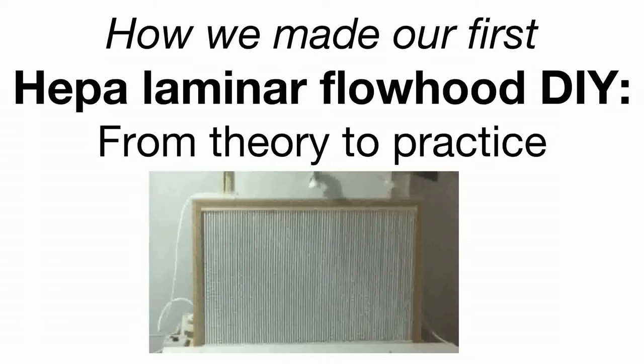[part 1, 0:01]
I'm going to tell you today how we made our first HEPA flowhood, how we did the design and the calculation, and chose our equipment and put everything together. So it's our first one. We are not experts. We are not here to give lessons. But somehow we probably summarize all the research you have to do if you are building your first HEPA flowhood. If you are an expert, please tell us what you think in the comments. We will be happy to know what could be improved in our design and in my video.
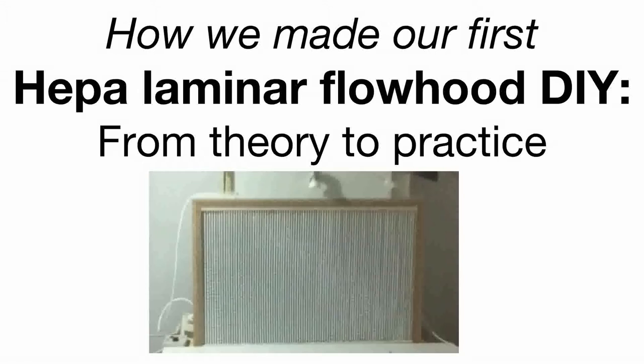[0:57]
So first I will describe what a HEPA flowhood is, and then I will explain how we choose the filter, the blower, the ventilator and the prefilter. I will finish on the surprises and mistakes we had while we were building it. So after the presentation I will show you some live pictures, live videos of the construction and of our flowhood. It is a special design, extra silent, and I will show you the HEPA laminar flowhood that we have built, working, that we are using now regularly.
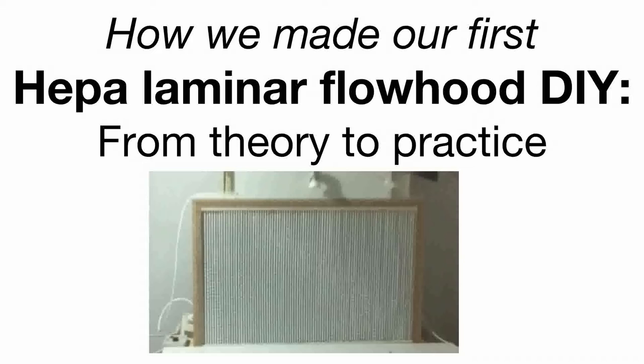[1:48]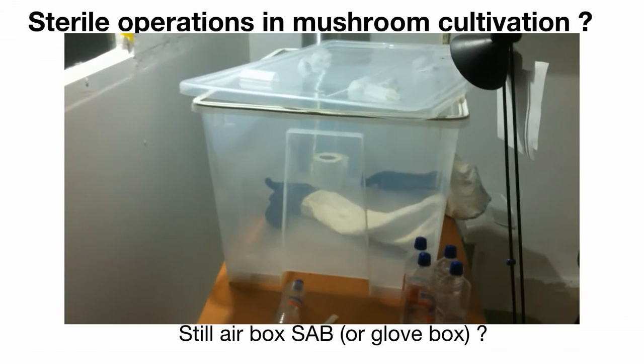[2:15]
In mushroom cultivation, we need to make sterile operations. So up to now we need to use a glove box or still air box, like in this image here, and it's a cheap and very efficient way of doing mycology, but we made like half a ton of sawdust in something like this, no, bigger.
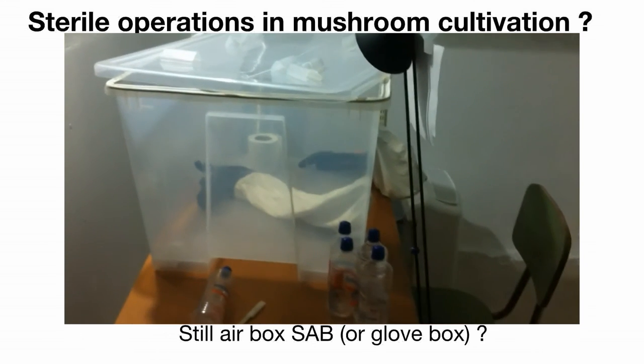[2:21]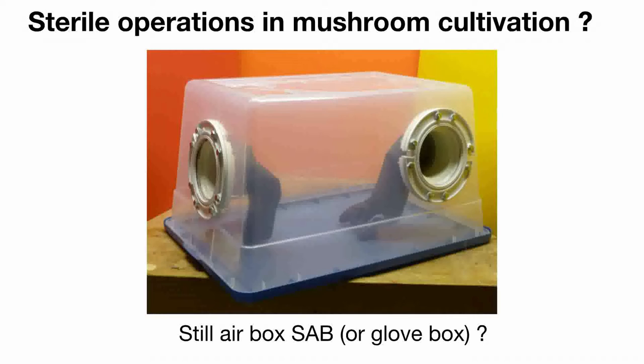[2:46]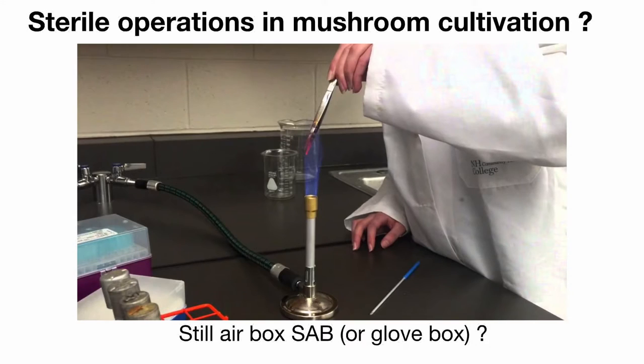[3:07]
Now that we made our flowhood, we keep our glove box because it's a better choice for cloning wild mushrooms, where you don't want a lot of wind on your specimen because it spreads contaminant everywhere. But for regular mushroom cultivation, it's more the laminar HEPA flowhood that is used. So it's not that bad, the glove box. There is another alternative, Bunsen, but I won't tell you more about it here.
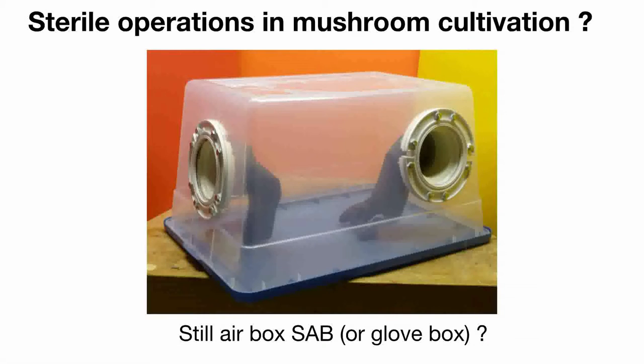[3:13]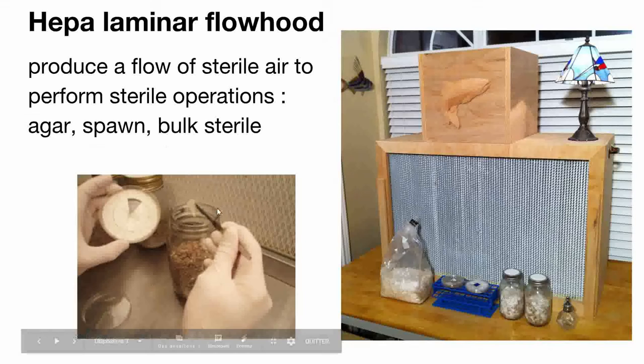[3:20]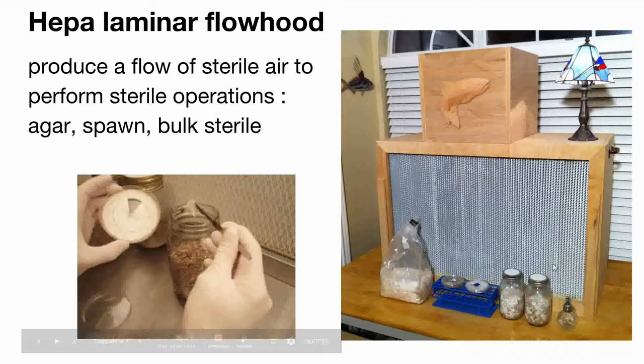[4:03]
Let's talk about the HEPA laminar flowhood. The idea is to produce a flow of sterile air and perform the sterile operation in front of this flow. Operations like agar culture and spawn multiplication: you have the agar, and you make your first master spawn in front of the flowhood. And these are the different steps, and you can do all the sterile work, the final sawdust blocks that will give the mushrooms as well, in front of the flowhood. And it's very practical for us because you can easily make many blocks of sawdust, while in the glove box you have to make only a few of them.
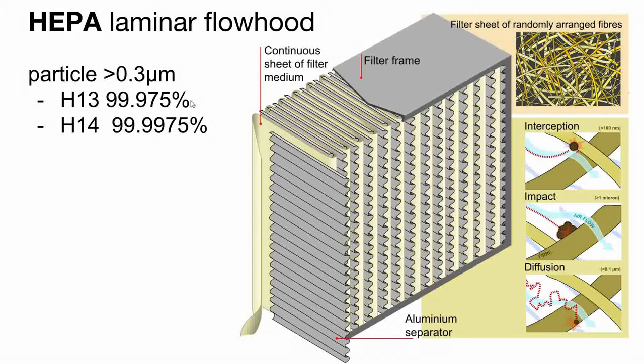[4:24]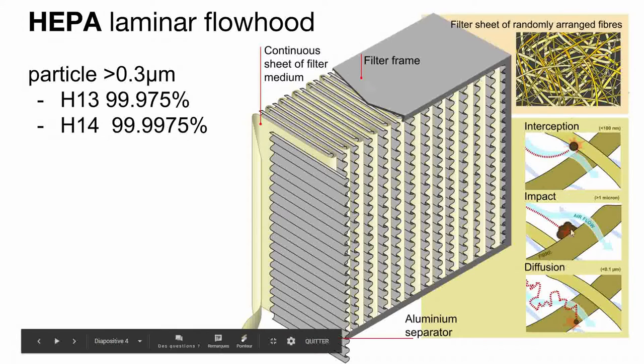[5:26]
What is a HEPA flowhood exactly? A HEPA filter, first, can filter down to 0.3 micron. And depending on the class of the filter, it can filter 99.9975% of the particles of this size or bigger than 0.3 micron. It works like a cloth, a sheet of randomly arranged fibers, and the random arrangement makes the flow difficult for particles to cross, and they guarantee this.
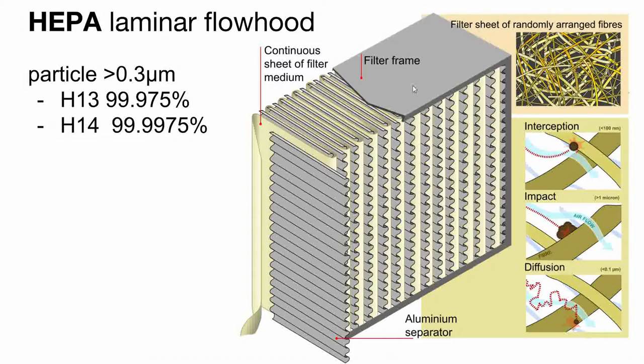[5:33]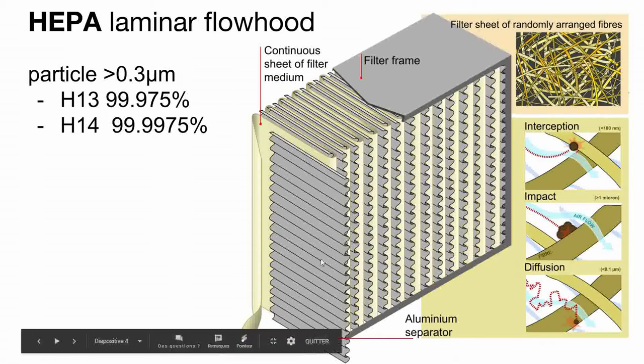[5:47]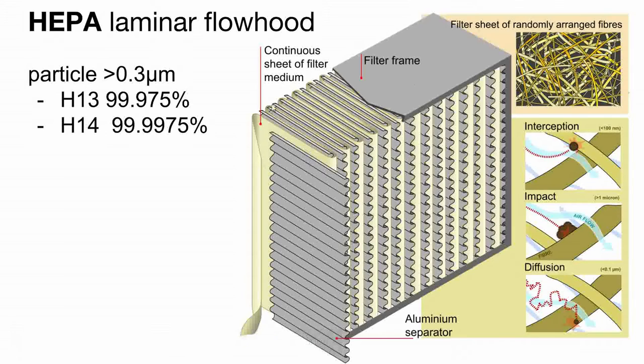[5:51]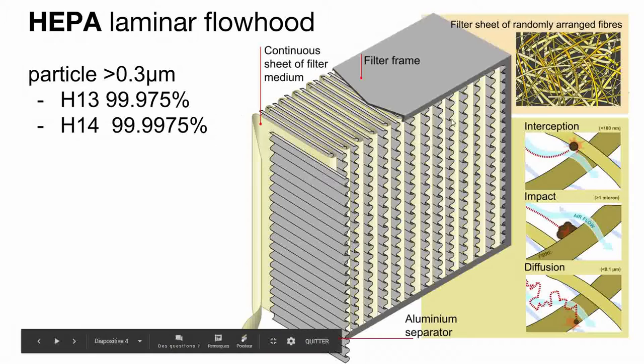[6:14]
If you look at the HEPA filter of a flowhood, you will see this blue aluminium separator and this white folded sheet of HEPA filter, made of randomly arranged fibers folded like this. The aluminium separator keeps the folds away from each other, so when the flow comes they can have a regular distribution of air through this folded sheet filter.
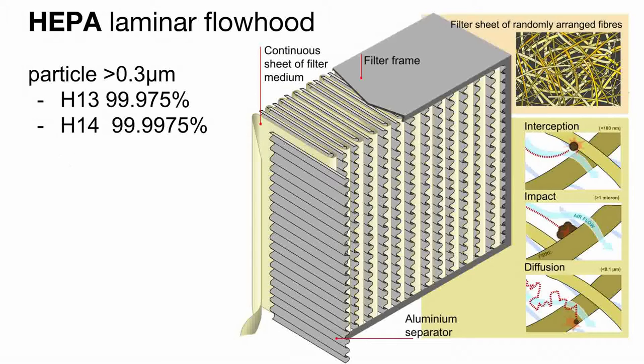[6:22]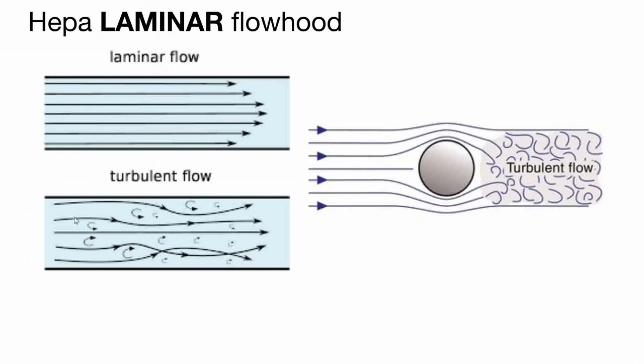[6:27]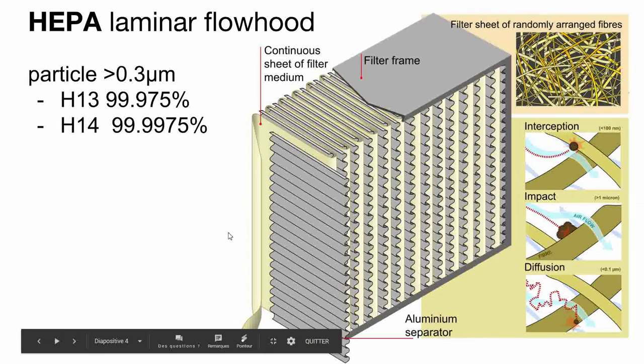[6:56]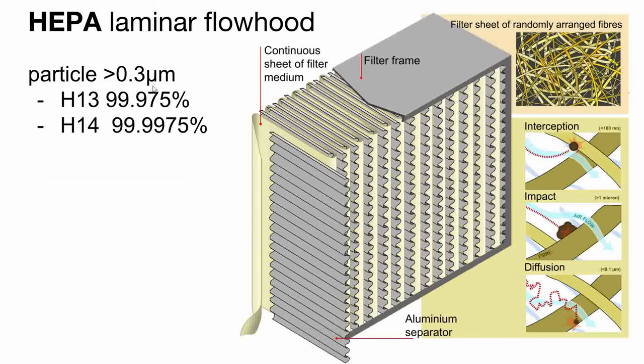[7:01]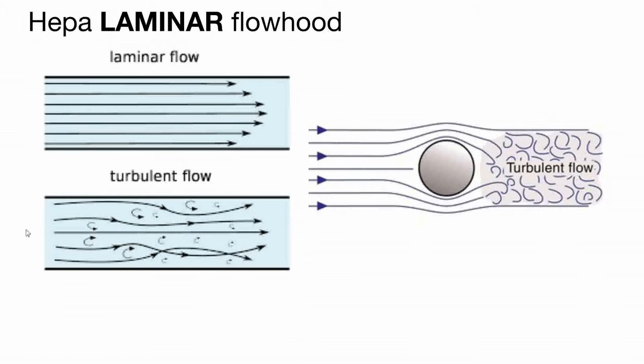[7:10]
What is laminar in HEPA laminar flow? Not all HEPA filters make a laminar airflow, only a certain type allows that. We need this type because the HEPA laminar flowhood does not only produce sterile air, it produces a laminar flow of sterile air. Bacteria are bigger than this 0.3 micron. Only viruses can be smaller than this, and for mycology it's not a concern, so we consider it sterile. So all the contaminants bigger than 0.3 micron, like on your hand, in front of the flowhood, will move away from the HEPA because there is this flow of sterile air blowing on your face, and it's blowing in a way that is laminar.
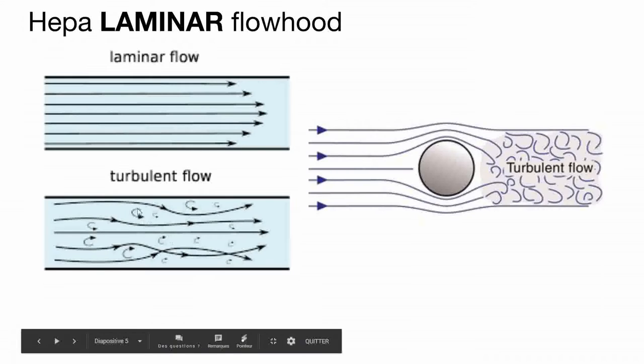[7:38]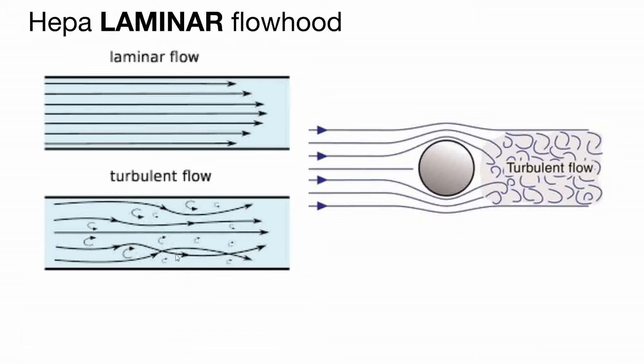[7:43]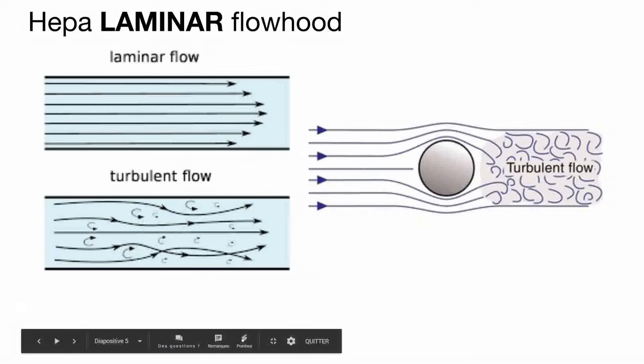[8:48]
When it's not laminar, it's turbulent, and when it's turbulent, some particles come back. They kind of circle around, and this makes it possible for contaminant from your hand to reach the substrate near the flowhood if your flow is not laminar. And after an obstacle, the flow becomes turbulent. This is a normal thing. So you don't work behind another object. You always need to be in front of the flowhood to have this laminar flow that will blow only clean air without the turbulence that can bring contaminants from around, from you, actually. That's the biggest problem.
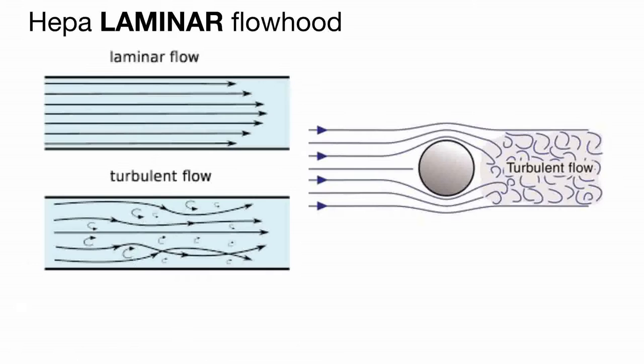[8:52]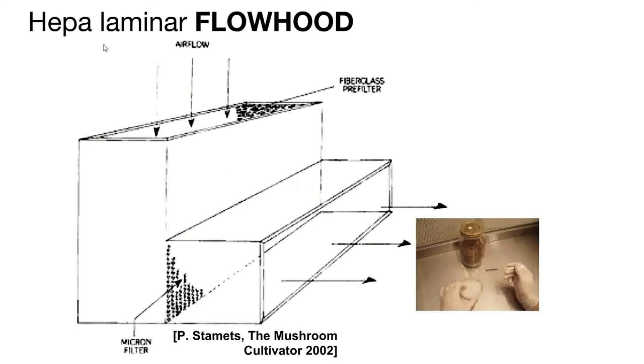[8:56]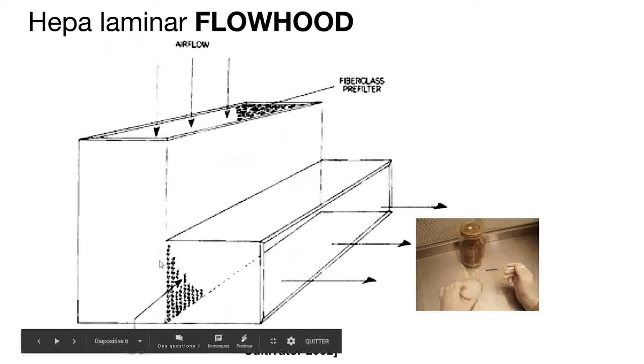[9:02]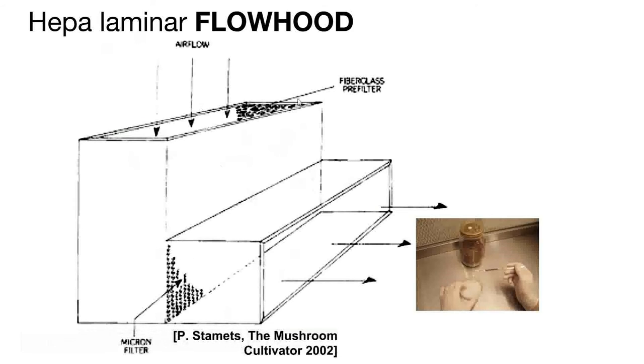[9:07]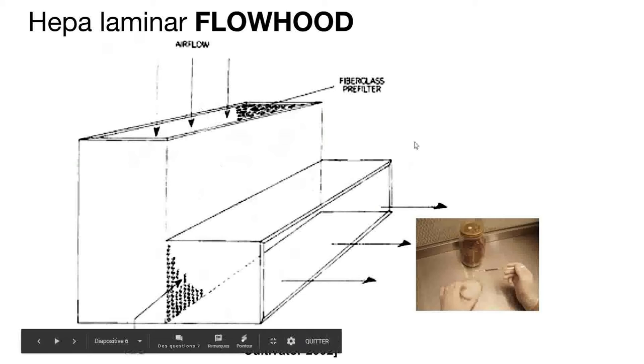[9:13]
So we arrange this filter that produces laminar flow in a box like this. It's at the bottom of the box here, and at the top of the box here there is an opening, and we put the prefilter. This is coming from Paul Stamets' book.
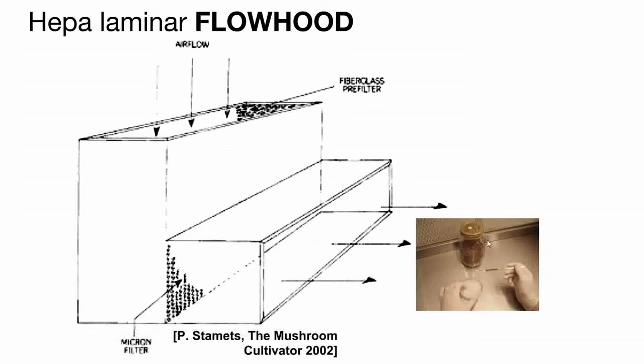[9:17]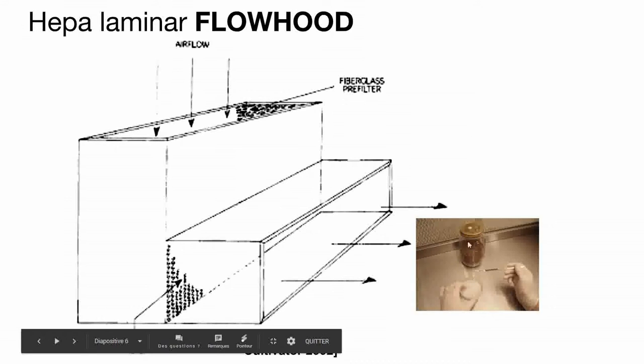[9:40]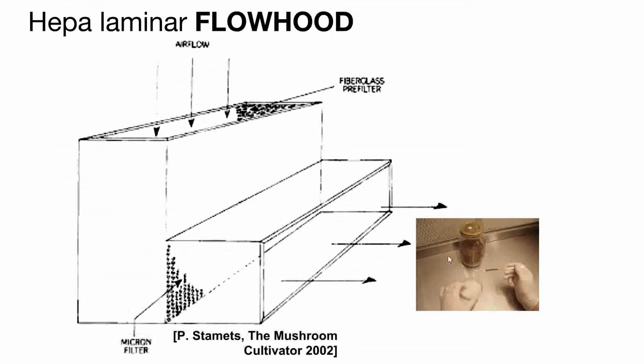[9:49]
Okay. And after we can work on this clean flow of laminar air when we put these objects in front of the HEPA. So here the clean substrate is in front of the HEPA, and maybe it's better to not work behind this jar, like he does in the picture.
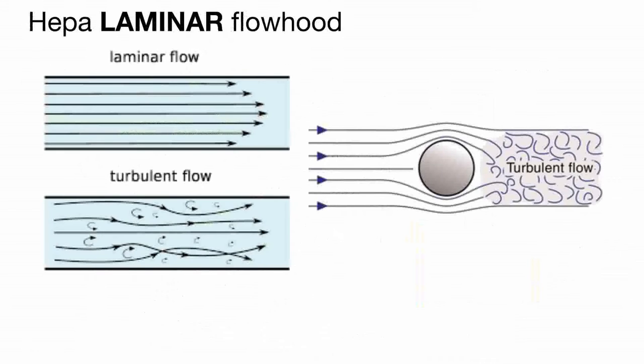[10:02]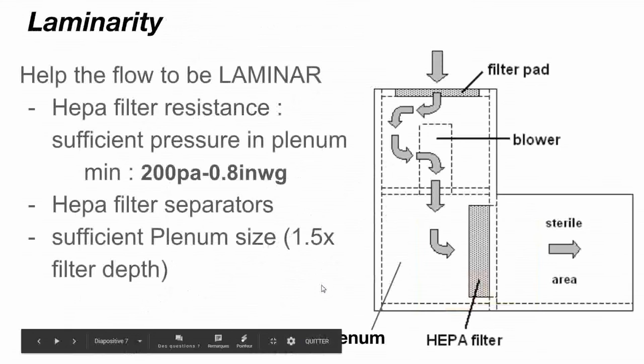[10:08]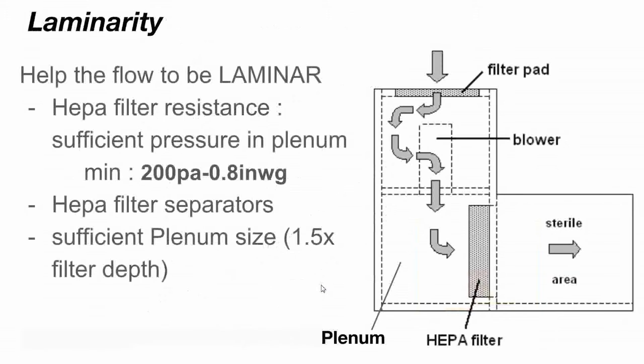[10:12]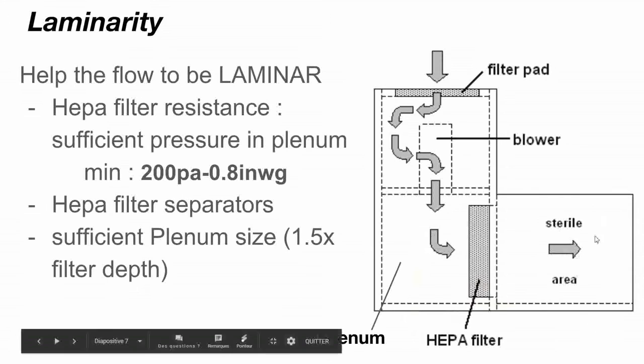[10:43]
So again, I will insist a bit more on what is laminarity. The fact that the particles move parallel to each other. This is laminarity. To achieve laminarity, you need a HEPA filter that will resist. So here we see what is inside the box. Inside this box there is the prefilter and the blower that will push air inside the plenum here that will be under pressure, and there is the HEPA here, and this pressure will go through the HEPA filter to bring sterile air in the work area.
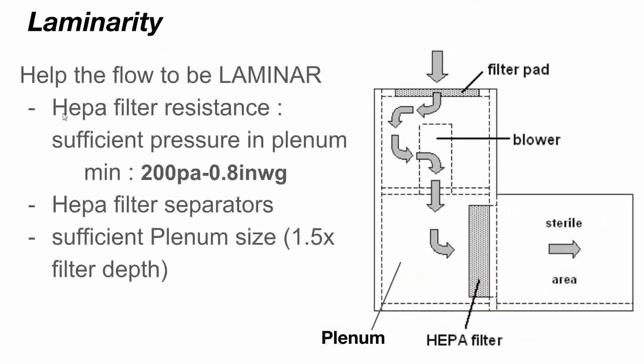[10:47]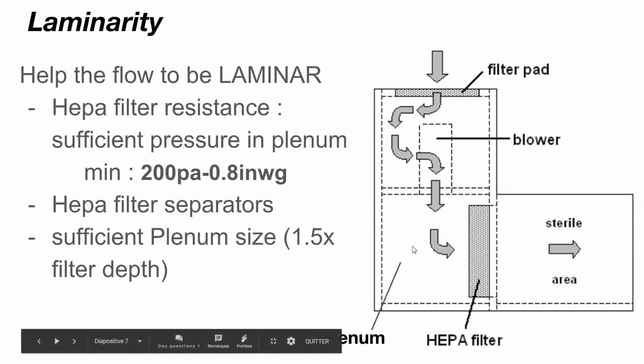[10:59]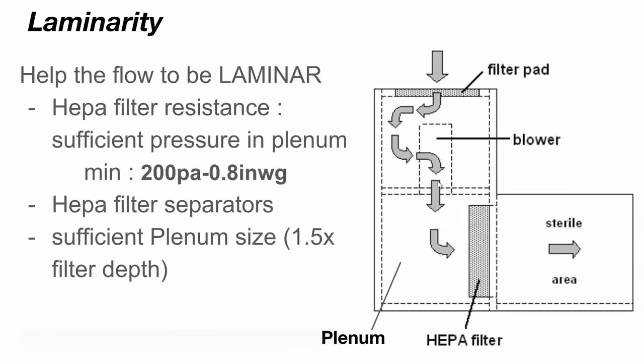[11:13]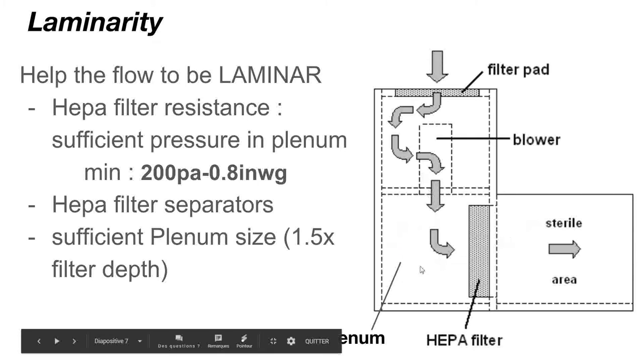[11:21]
So we need actually a HEPA filter with a resistance sufficient to build some pressure in the plenum, and this is what helps the flow to be laminar. If the pressure is too small in the plenum, meaning that the filter here is not very resistant, the air will go from the blower to the outside more directly, without really building a good pressure in the plenum. So this is what we found. The information is that we need 200 Pascal of pressure here. I will give you the reference later.
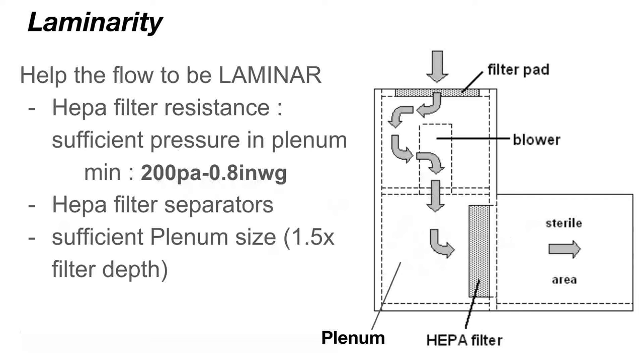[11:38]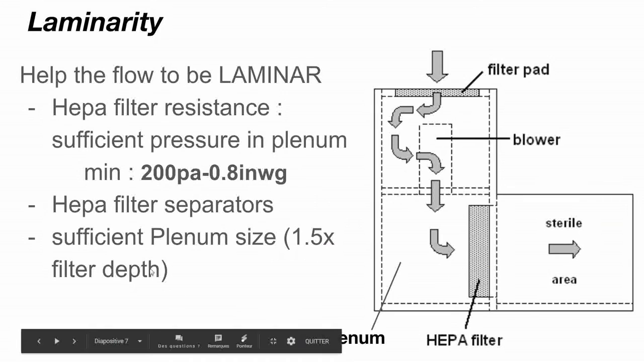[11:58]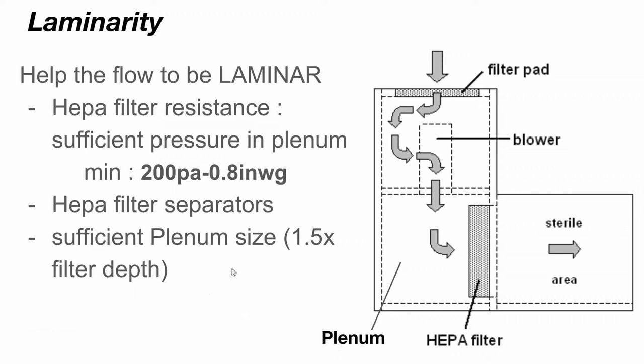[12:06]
Rabbit, let's grow mushrooms author, and he's saying that yes, the minimum you want is, Stamets recommends to have 1 inch of water, so it's 250 Pascal in here, and I will show you that it's not that easy to have this pressure, but this is the most important thing about the laminar HEPA flow, get a good laminarity, to have a good resistance, and this means to have a bigger blower usually. So we'll see that in detail here.
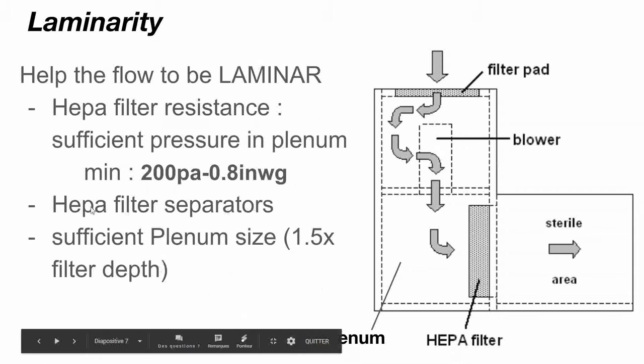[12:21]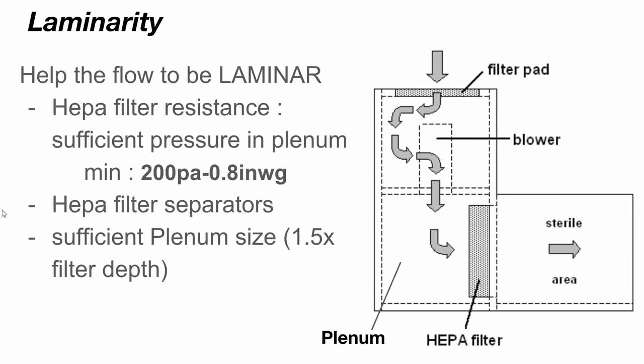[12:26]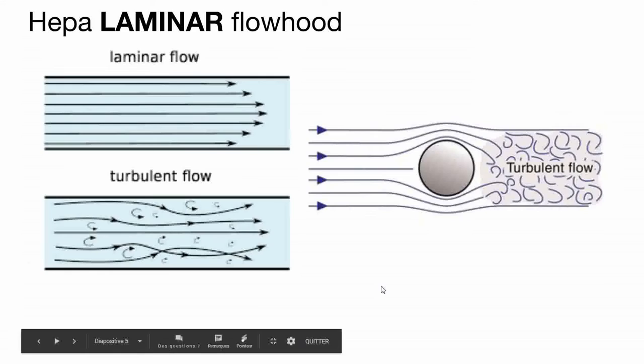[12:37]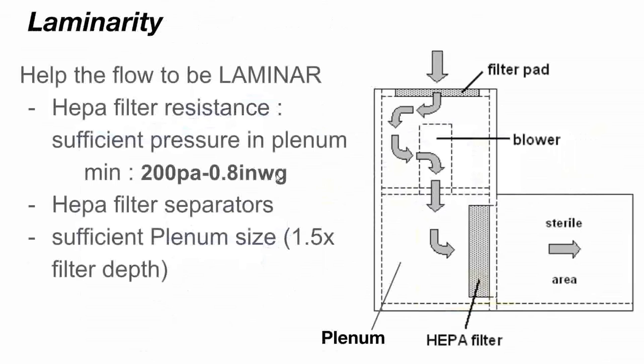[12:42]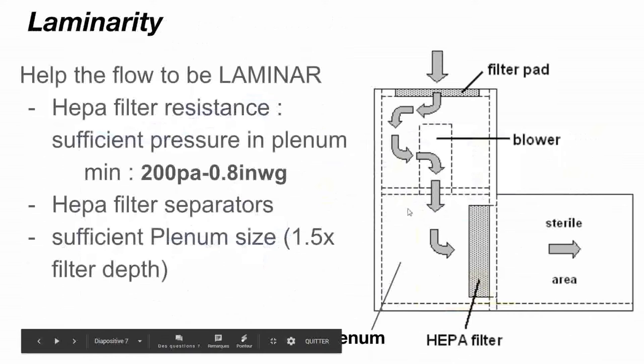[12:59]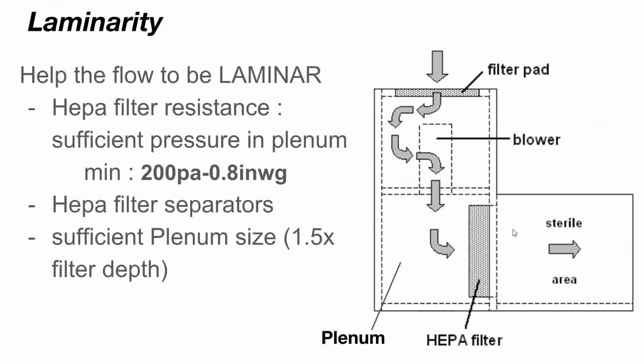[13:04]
The other things are that the separators, like the aluminium ones in the picture here, need to contribute to the laminarity as well. They help to keep the folds away from each other, which is not always true in HEPA class filters, but only for the one we use for making a flow hood. And also we have a sufficient plenum size, so the size of this box needed to be big enough for the air to distribute rather than to pass through directly. And maybe that's one of the mistakes we did, is to take only 1.5 times the filter depth, because I think it was not sufficient. I find it has too much difference between the corners, so maybe it doesn't fit so well inside the plenum. But we have sufficient pressure, so I will tell you about that at the end.
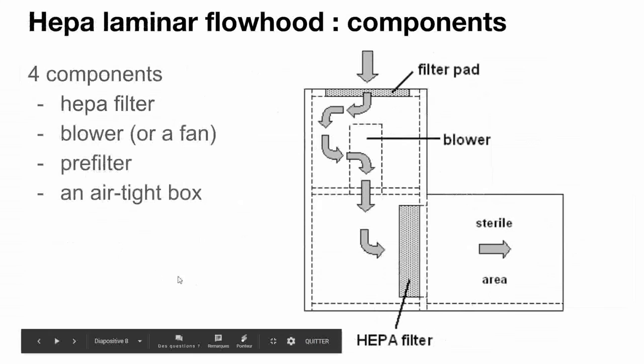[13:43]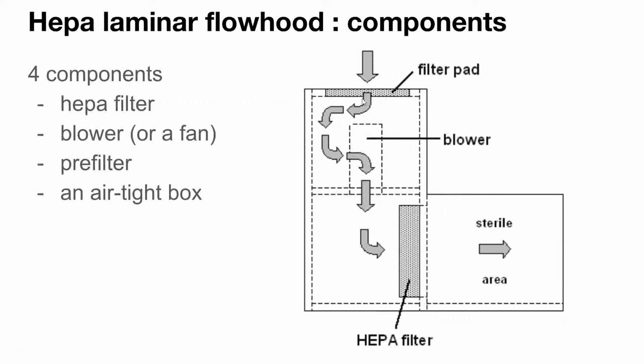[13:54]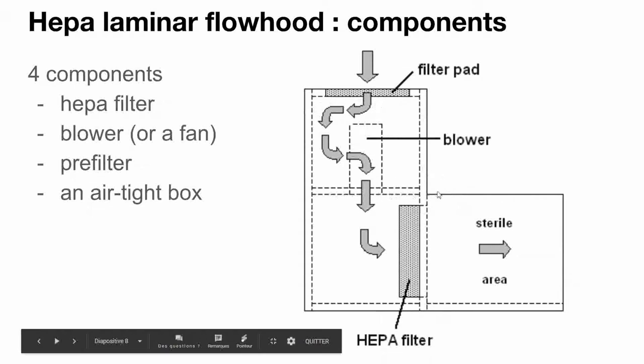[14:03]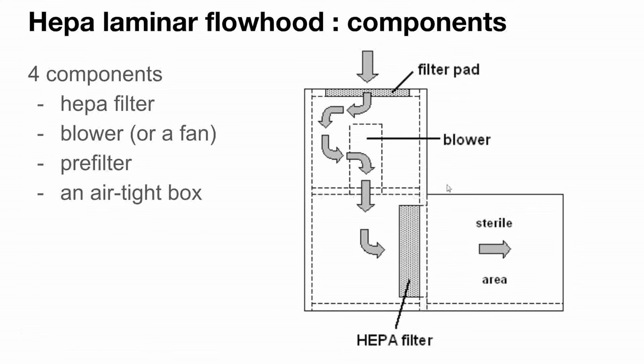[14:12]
Now let's focus on the inside. So we have 4 components, HEPA filter here. We have a blower here, or a fan, a ventilator, a prefilter. This is of course inside an airtight box. Some people extend the box on the sides, we didn't. Many people don't extend the box on the sides, and many people even don't build a box around the ventilator, we did. We'll show you why later, but these are the 4 components you will need to make a HEPA flow hood. It's not very complicated.
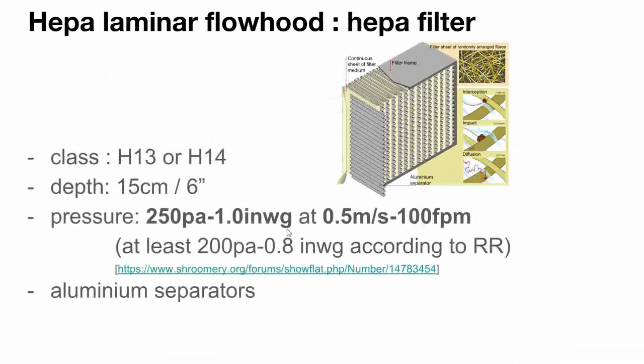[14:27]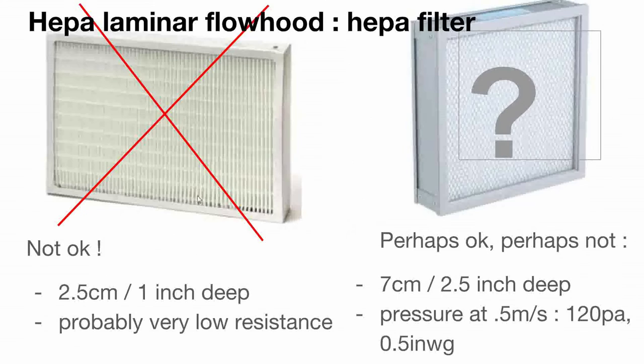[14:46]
Let's start with the HEPA filter. So you need this class of filter, H13, H14, with a depth of 15 centimeter, 6 inch, and a pressure of 250 Pascal, when it is tested with a flow at 0.5 meter per second. It's a pressure of 1 inch of water when it's 100 fpm. So it's not that easy to find exactly this.
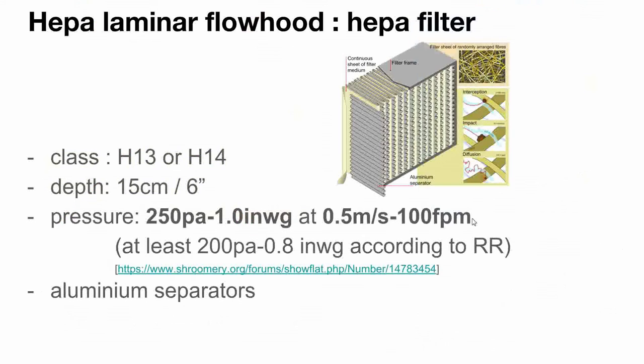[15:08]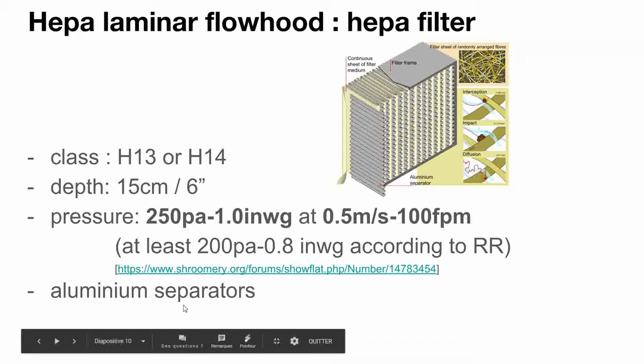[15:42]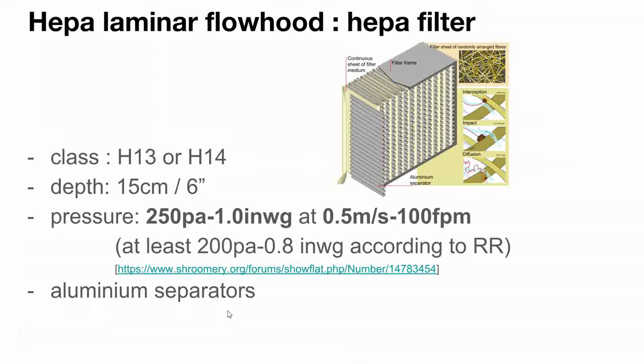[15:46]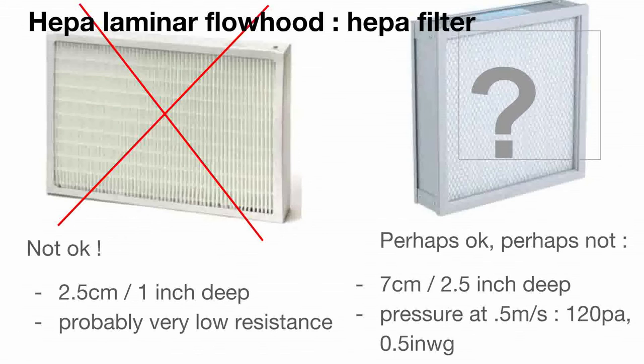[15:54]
And actually, the new trend is to go for a lower pressure. Somehow, even if it's a bit turbulent, it's still okay. Especially if you are doing bulk substrate, only bags at the end. No agar, no spawn, things like that, nothing critical, maybe it's okay. So here there's a reference for the Shroomery thread that says about 200 Pascal minimum. This is the recommendation of Paul Stamets. And Stamets also mentions aluminium separator. I'm not sure the kraft is as good, like maybe it doesn't resist as well as aluminium.
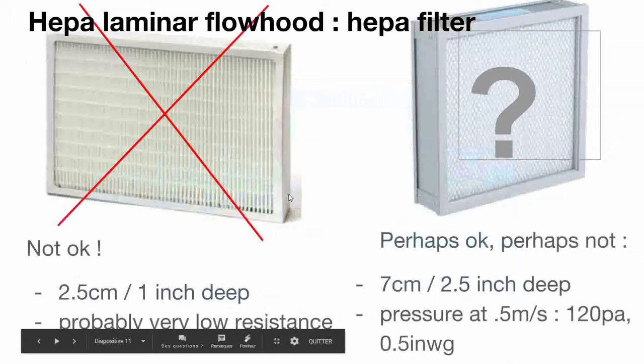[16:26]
So when you look for HEPA filters around, the first thing you will find is this type, the red cross here. It's not okay at all. It's 1 inch deep. It's really a HEPA filter. You need something like this in the lab to filter the air that comes from outside and to positive pressure your lab with this, but not to make operations. It has very low resistance, so it's not good at all for HEPA laminar flow, no laminarity with this.
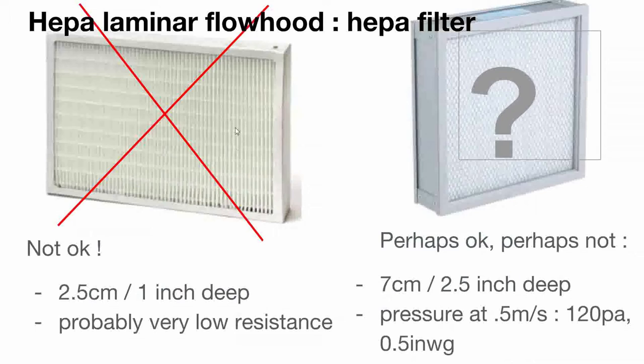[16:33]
And you see from this here that there are only small things that hold the holes together, meaning in the middle they will tend to stick together and the flow won't be very regular. So when I was looking, I also found these 7 centimeter deep, 2.5 inch. There's a lot of people who use that, and when I asked around, I wanted to make a HEPA flowhood, they told me to take this, and this is what I use at the university lab. Nobody worries about having 6 inch deep.
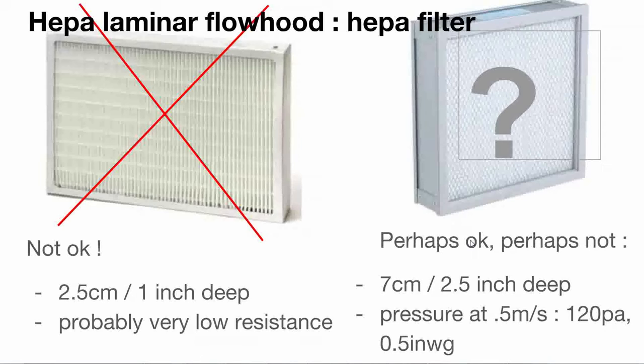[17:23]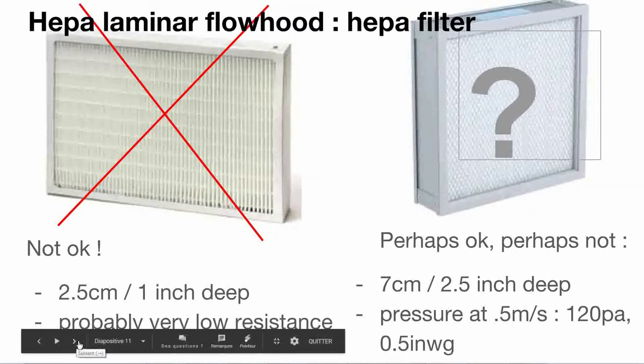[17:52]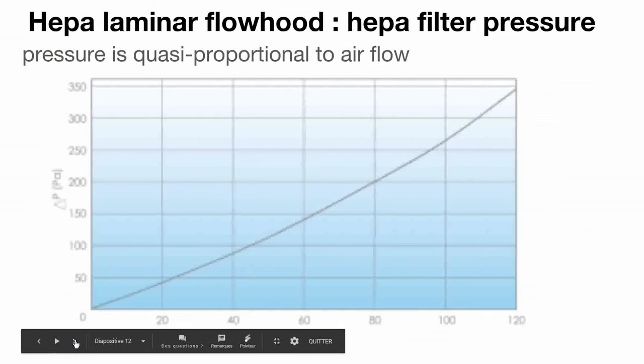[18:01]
I don't know, usually they have a low pressure, 120 pascal, and it's like only 0.5 inch of water, and so it's not that good, but maybe they are okay. Maybe in the next one we'll try this, just to see the difference. And also make some savings, because less pressure means a smaller blower, which means a less expensive blower. So let's have a look here.
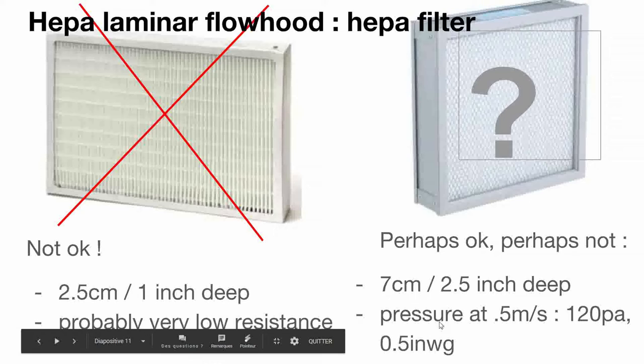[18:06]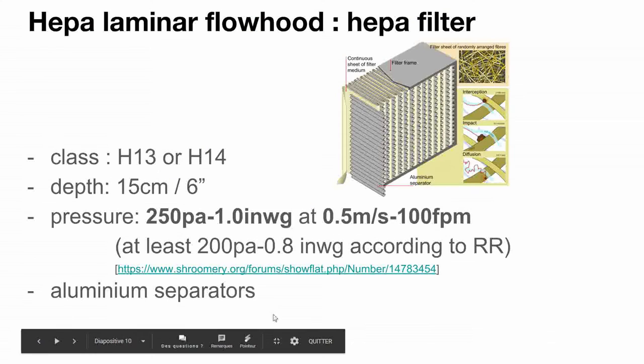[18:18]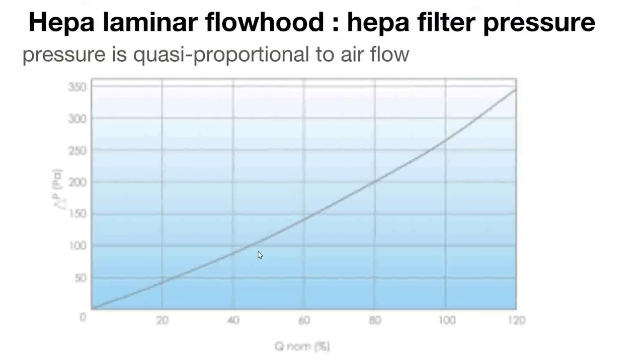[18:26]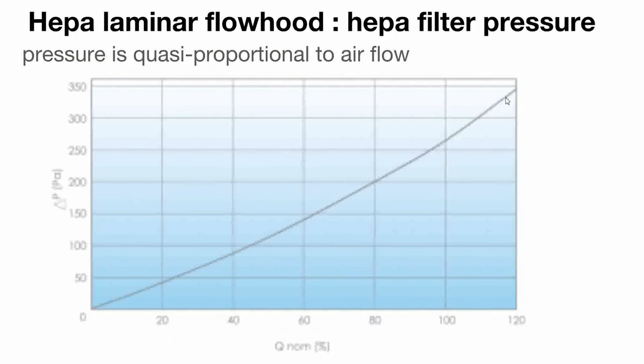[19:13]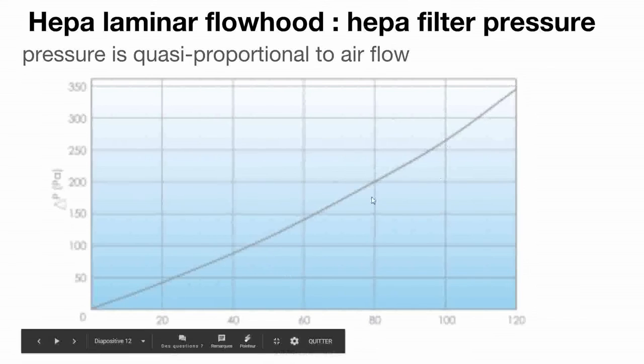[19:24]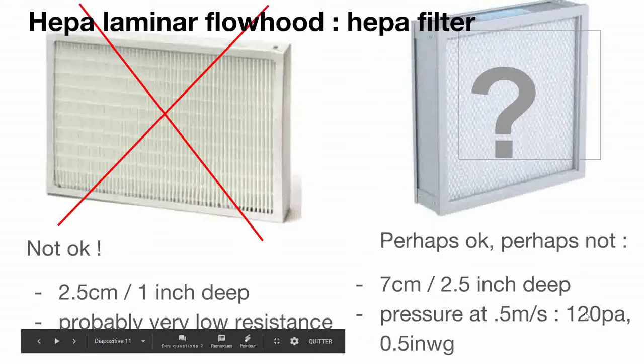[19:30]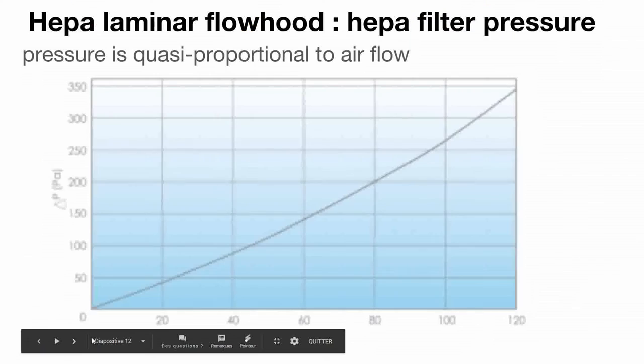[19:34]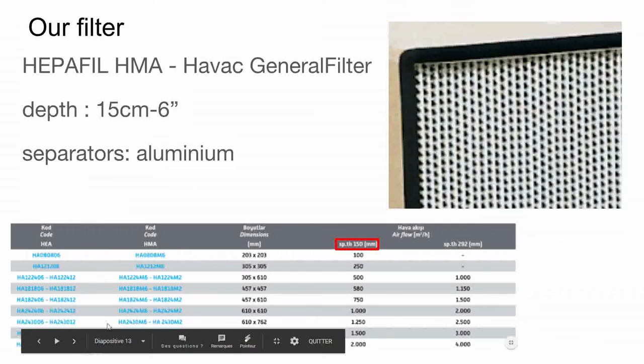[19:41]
So this is the normal curve for a flow for a HEPA filter, and so you can understand that it is critical to know, when you get the pressure, what speed we are talking about, because if it's half the speed, it's half the pressure. Okay, so let's see that more in detail.
We got HEPA from a Turkish-Italian manufacturer. It's HEPAFIL HMA. Havac GeneralFilter is the name of the manufacturer. It's a 6-inch. I wanted a 6-inch, and that was like the only one I could find nearby. And here for us, it's quite near to take from a Turkish manufacturer. It makes sense. It's the next country, and 6-inch, and I could find another provider in England. I will tell you later.
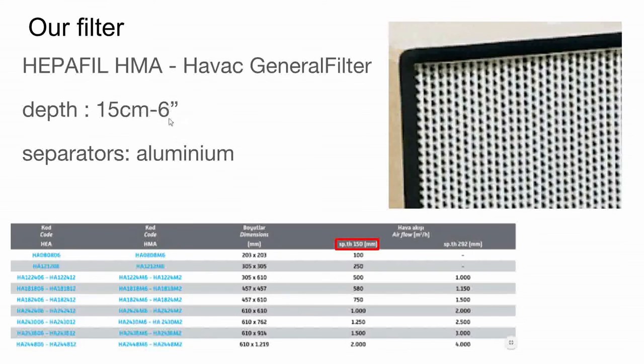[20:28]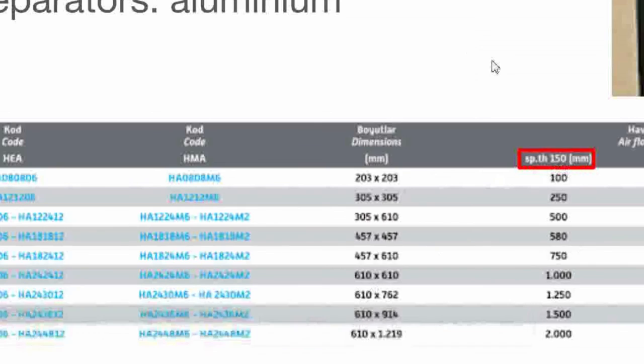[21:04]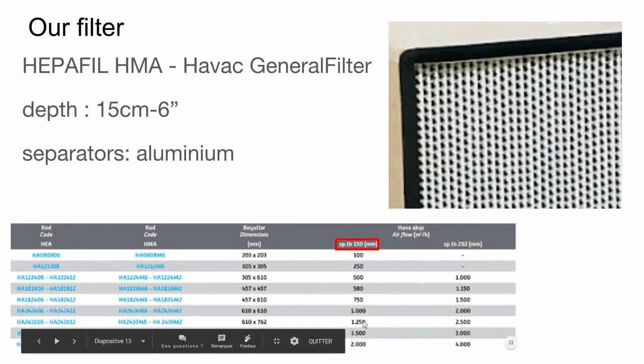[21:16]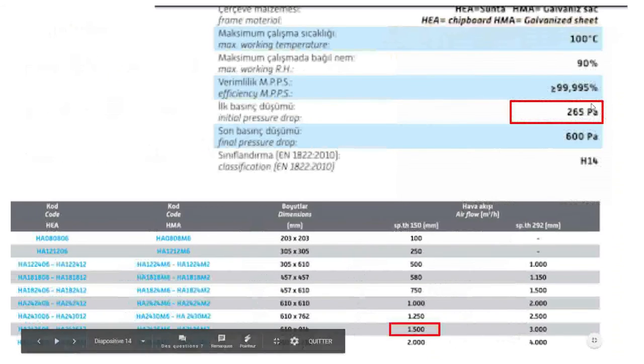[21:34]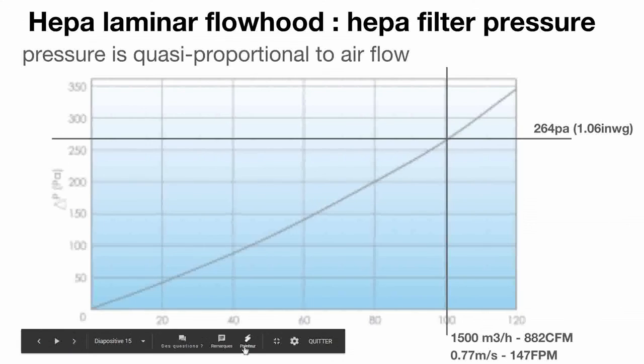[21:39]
We will use it. So yes, we want to make a 76 by 90. We find this HVAC filter. We found this flow, and we have the pressure. Of course, the pressure is a bit higher. So we calculate the flow from this. The flow is 0.77 meter per second. So we wanted to have 0.5 meter per second, and we have the pressure, this 1.06. So it's the pressure we want, but at a higher flow.
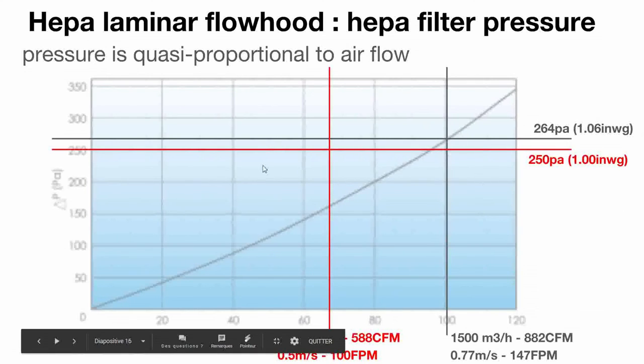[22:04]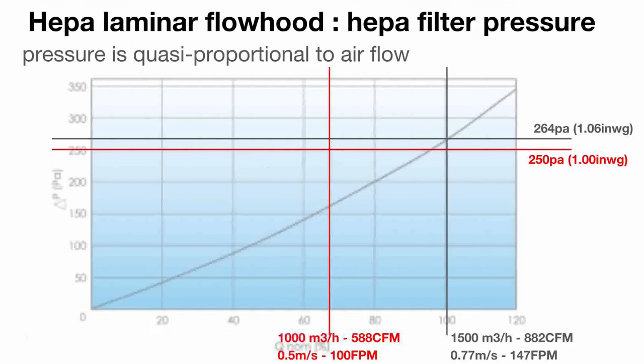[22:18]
That's a bit the problem, because now if we move it to the flow we want, this is the point we want, but it's not correct. Our filter is not doing the right job. But that's the best we found. So what we did is this. Look, if we are running at 0.5 meter per second, 100 fpm like Stamets suggested, we will get only 160 pascal, which is 0.64 inch of water. It's not enough.
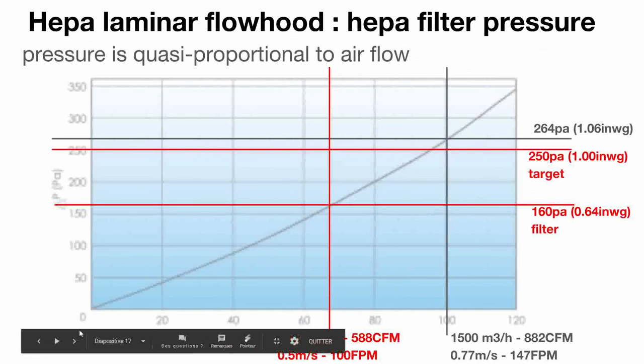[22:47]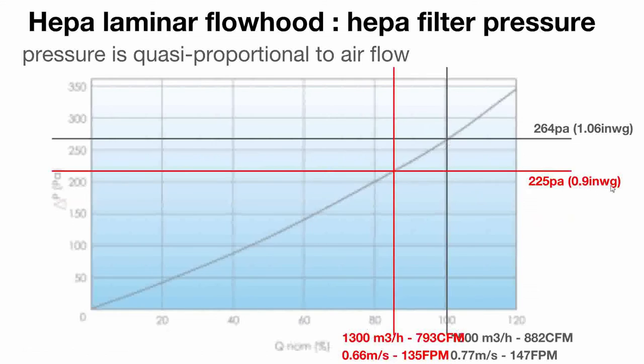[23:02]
We want more. So what we will do is increase the flow up to here, not to the max 0.77, but at least 0.66, and we will get 0.9. It's not that bad, the pressure, so it will have a minimum of laminarity. So this is because the filter is not doing the right job, and it was really the best, the nearest to Stamets' recommendation. So we tried to do it like this, to have a better pressure with a higher flow.
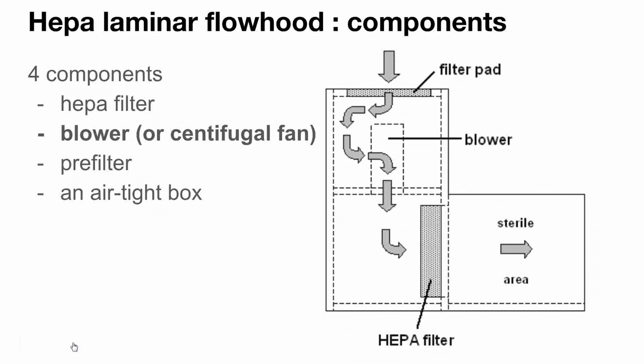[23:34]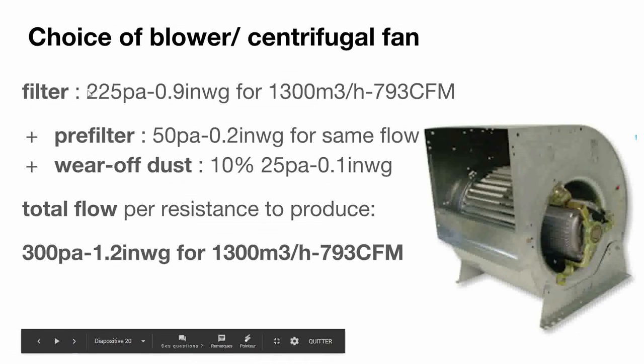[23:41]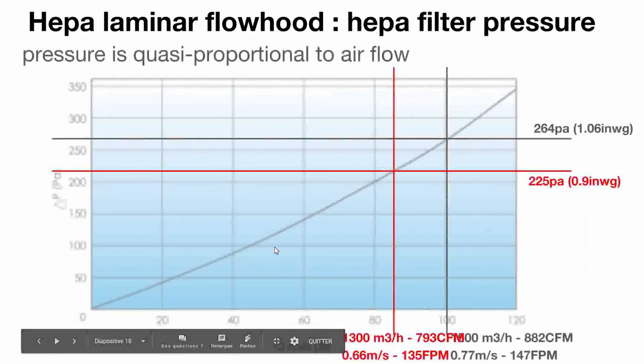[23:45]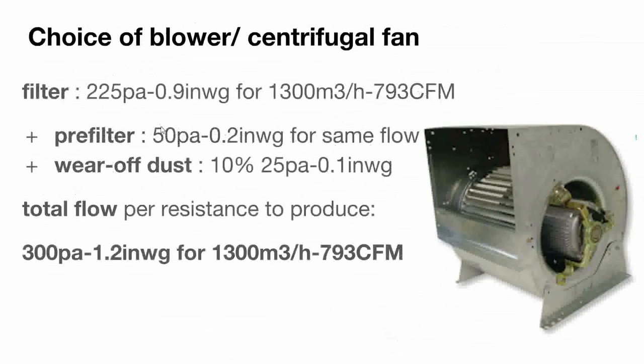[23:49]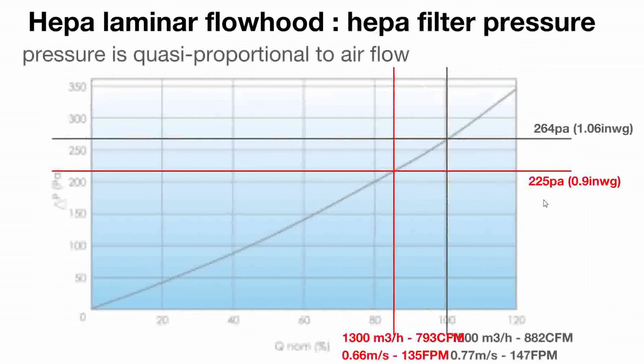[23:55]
Okay, next, the blower. We will choose the blower using the pressure we calculated here. So we use it here. We now need this flow with this pressure, a blower able to give us this pressure and this flow.
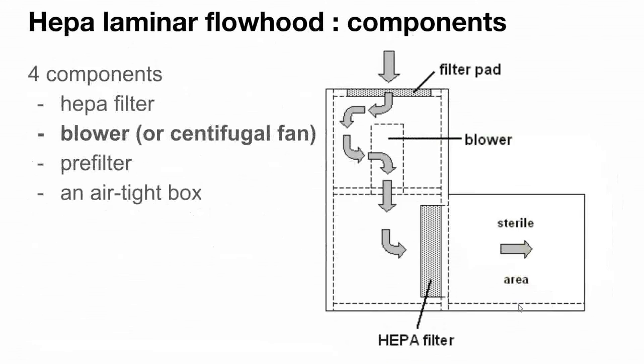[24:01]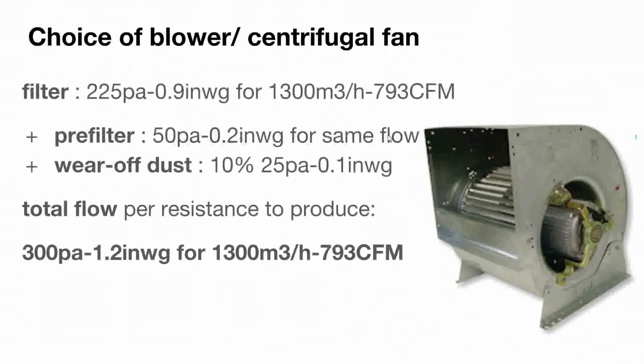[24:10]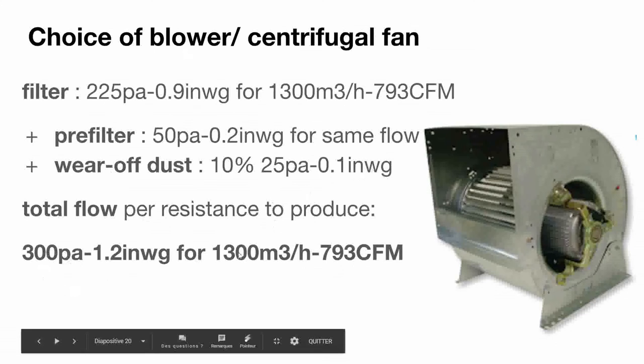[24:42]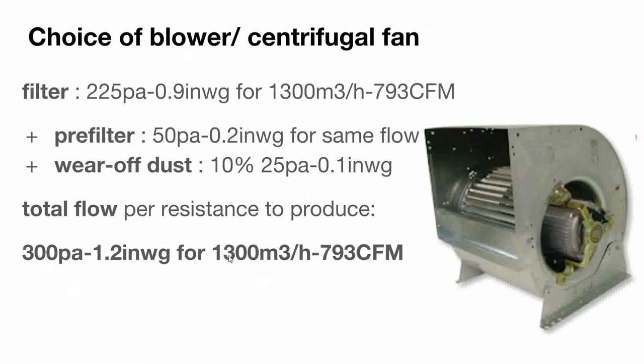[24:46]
Okay, so we will also add a prefilter that will probably add 50 pascal of pressure to the set for the same flow, and some 10% of wear-off. So we will calculate here, it's about 25 pascal, 0.1 inch of water, for dust over a few years of use. So this gives us the total flow per resistance to produce 300 pascal. So we were only at this, and now we are at 300 pascal for 1,300 cubic meters per hour.
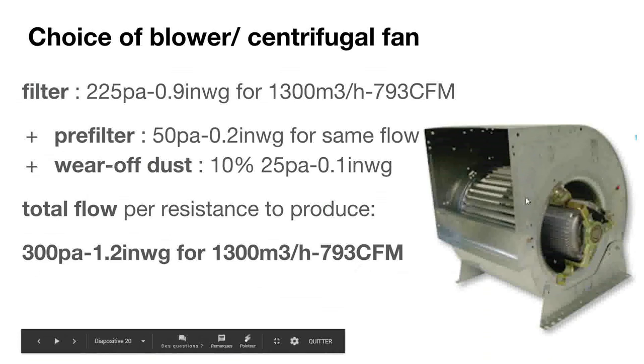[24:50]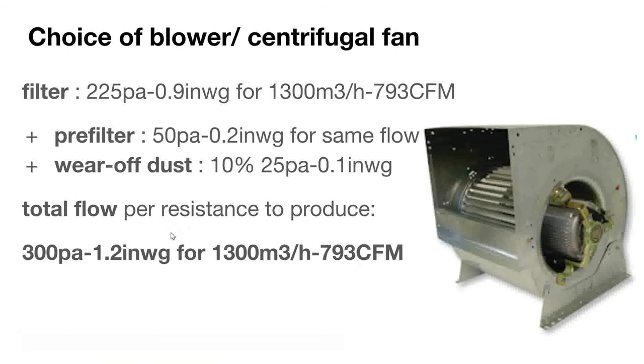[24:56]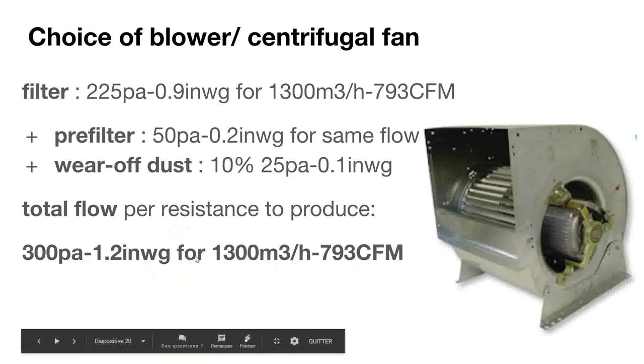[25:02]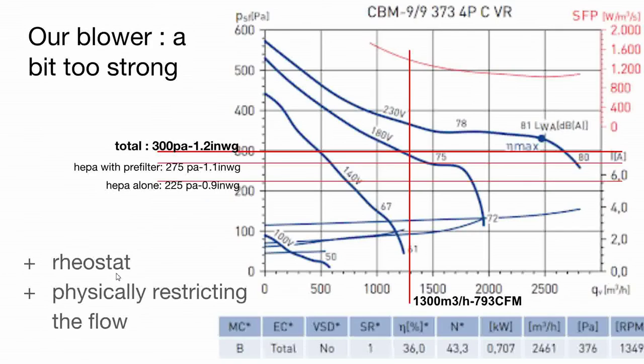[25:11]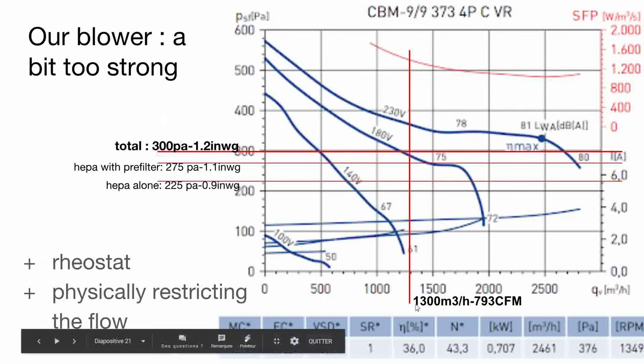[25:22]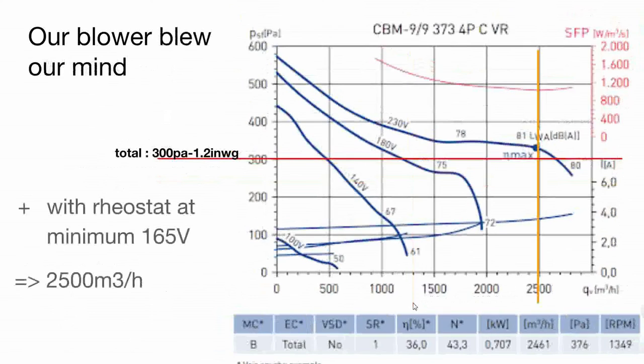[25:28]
Okay, so this is the blower we found. Again, it's the same problem. I will tell you more about it at the end, but we can find the exact blower. I mean, the number is easy here. What we found is a blower that gives more than this at a bit higher pressure. Somehow it's a bit too strong, but I will show you. What we want is this number, it's here: 300 pascal, 1,300 cubic meters per hour.
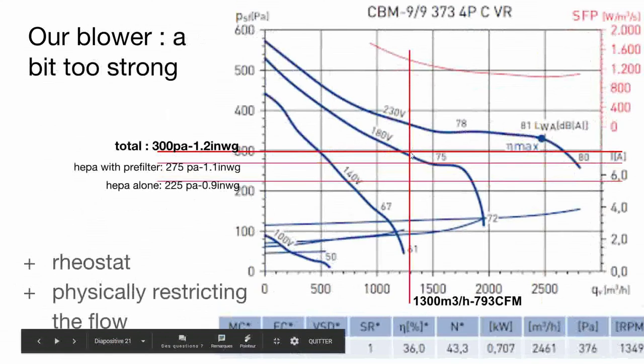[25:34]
Yeah, the HEPA alone requires this pressure. The HEPA with the prefilter, this pressure, and this pressure. And the blower provides this flow at this pressure here, at more than 350. So we have to reduce the voltage to be able to produce the maximum at the point that we wanted. So it's okay to have a bit stronger.
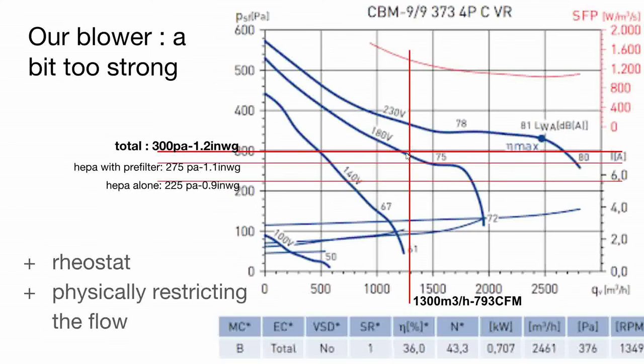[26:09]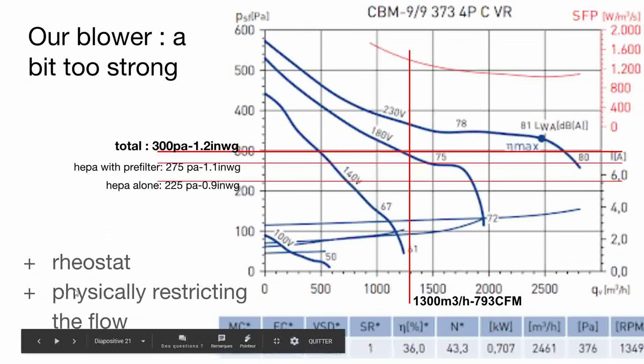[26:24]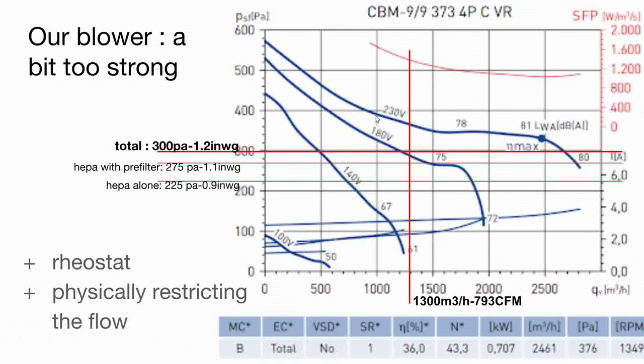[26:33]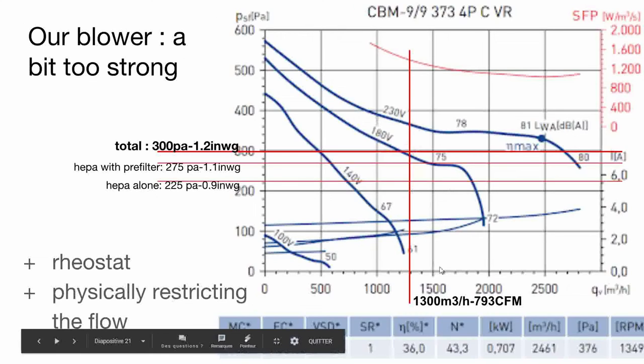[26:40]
If you can reduce the voltage, you can reduce the flow, but you can't increase the flow. If the blower were weaker, it would be a problem. If it's more, it's okay. So we use rheostats to reduce the voltage, but it's not enough. We also physically restrict the flow. We close part of the prefilter to have more resistance and reduce the flow, to reach the flow we want, more or less.
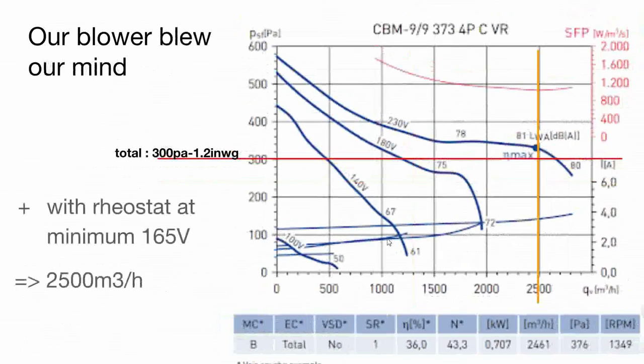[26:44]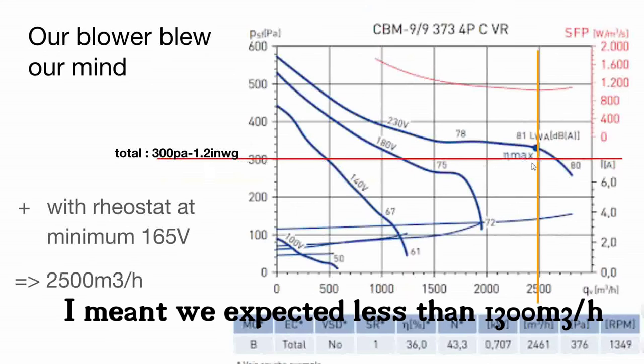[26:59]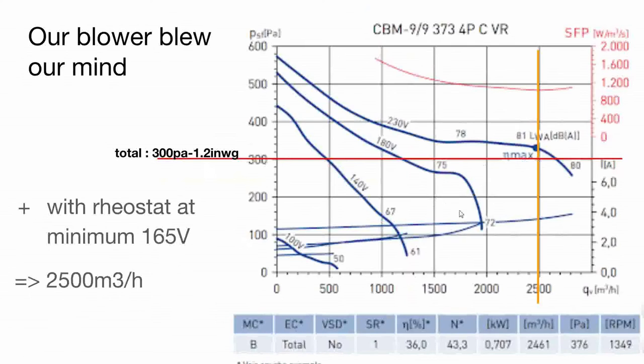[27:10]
And when we connected our blower, it was something crazy. The blower was giving this point of working. It was supposed to be 300 pascal, but it was giving this. And the rheostat was at 165 volts, so it was at the minimum of the rheostat. If we follow this curve, here it's 140. 160 is maybe something in between these curves. So it's something like here. But no, it was crazy.
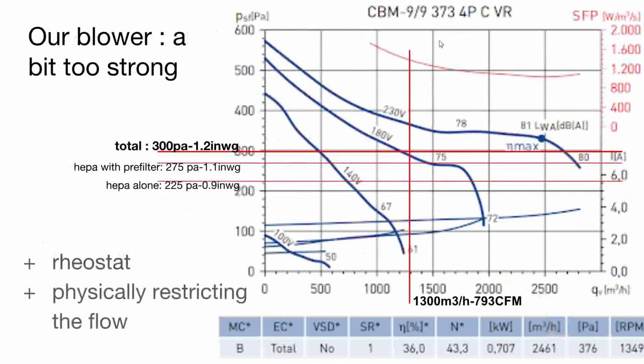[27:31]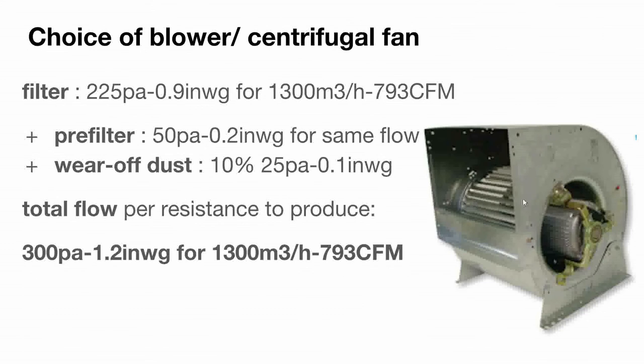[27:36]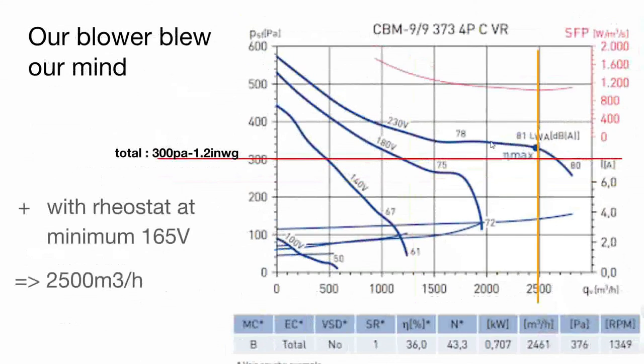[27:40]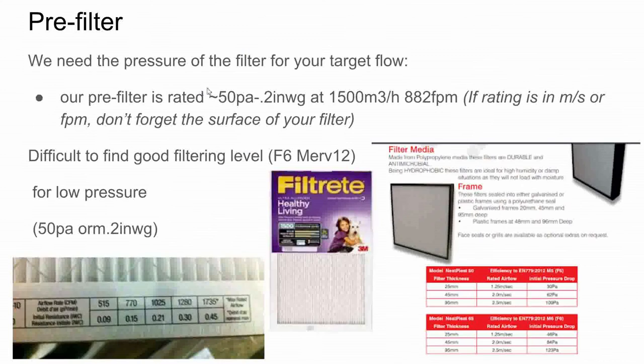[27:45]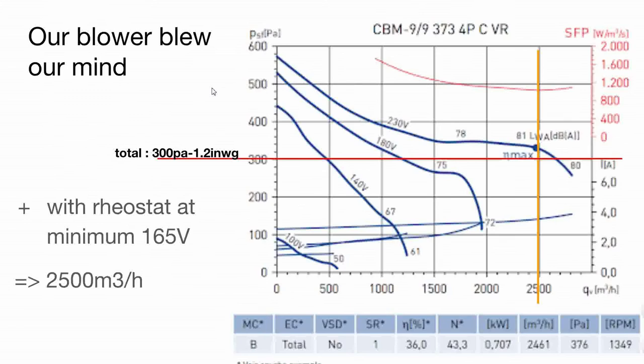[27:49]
So it's a French S&P blower. I didn't give you the details about the blower, but it's a bit too strong. This is the surprise we had with the blower, but yes, we can use it. We just restricted the entrance, and now it's giving the flow we wanted, the 1,300 here. About that flow.
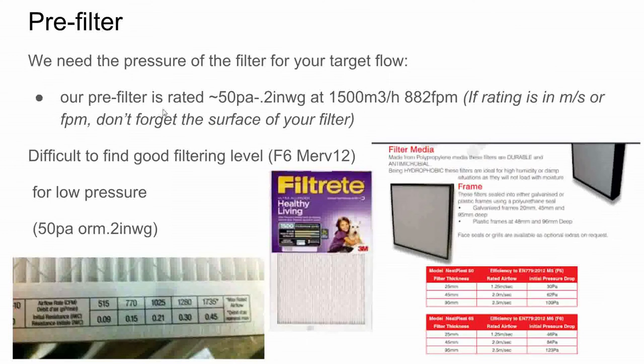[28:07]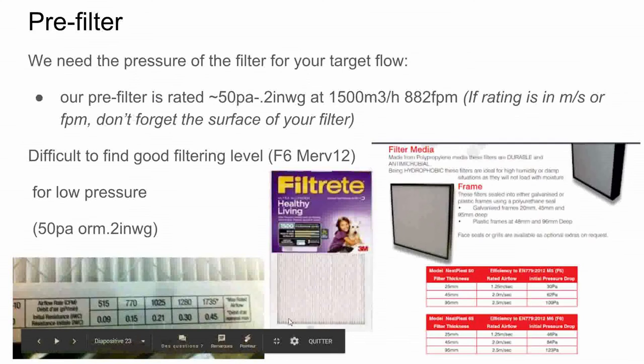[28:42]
So let's go to the prefilter now. We need the pressure of the prefilter to calculate the target flow. If you buy this like everybody does, it's 50 pascal, 0.2 inch of water. And of course, don't forget the surface of the filter. So if you want this pressure, it's at this flow. This flow means it's 20 by 24, exactly the one we bought actually.
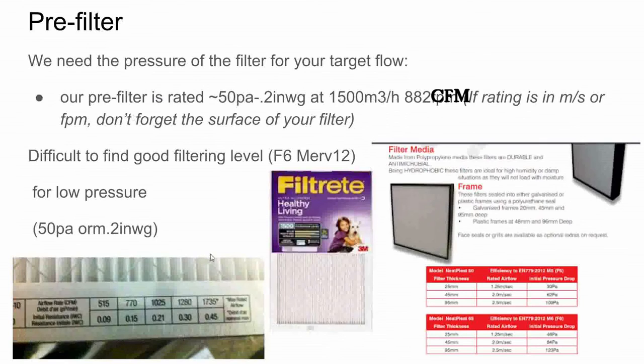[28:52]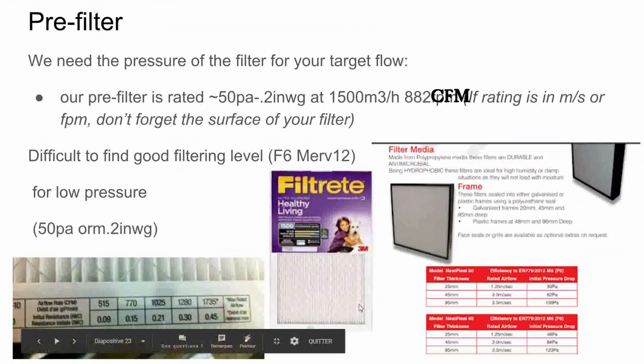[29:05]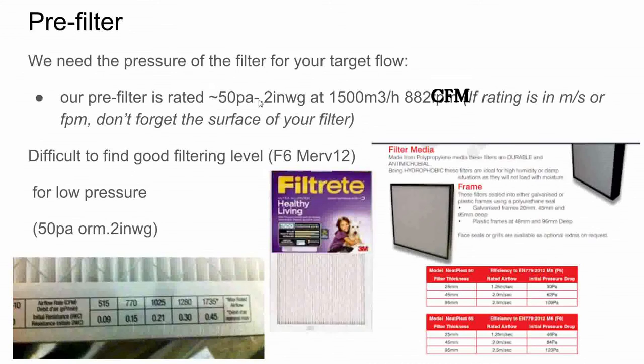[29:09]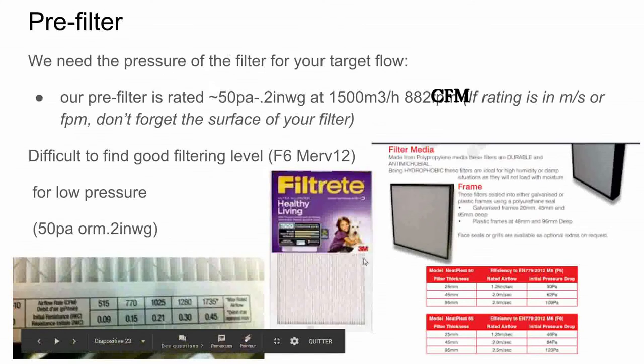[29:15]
And so it's pretty big. It's not the small one that you see everybody stick to the ventilator. You can use a big one or just a piece of it, but it will produce much higher pressure. Actually, we placed the big one, and afterwards we closed it by half, or three quarters, just to create more pressure and reduce the flow.
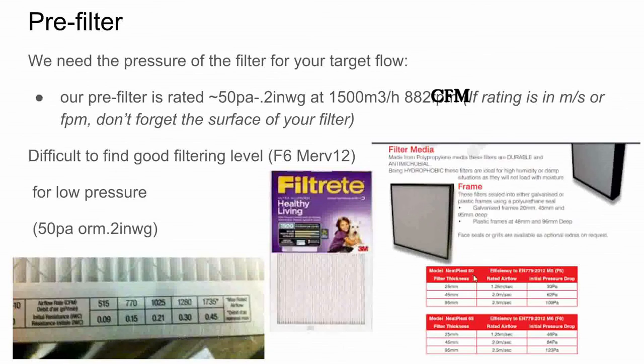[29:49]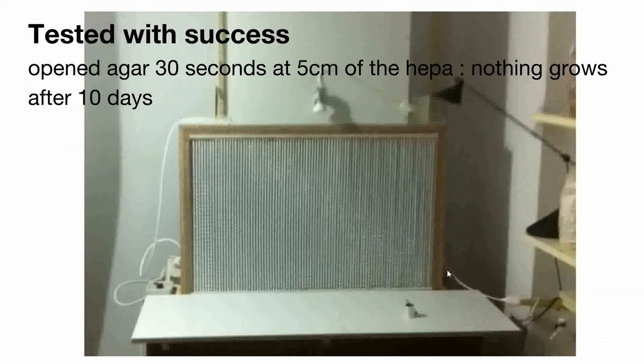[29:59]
It's difficult to find a good filter, more than F6, MERV 12, especially in Europe with low pressure, and that's not 30 centimeters thick. So at the end, everybody buys this because it's the only one. There is also Jason, who has a filter that is quite good and quite cheap as well, but they didn't want to sell it to me. I don't know why. I will tell you more about it later.
So we assembled everything, and it worked. I opened the agar for 30 seconds at 5 cm from the HEPA, and nothing grew there after 10 days. It's working, we don't have any problem yet.
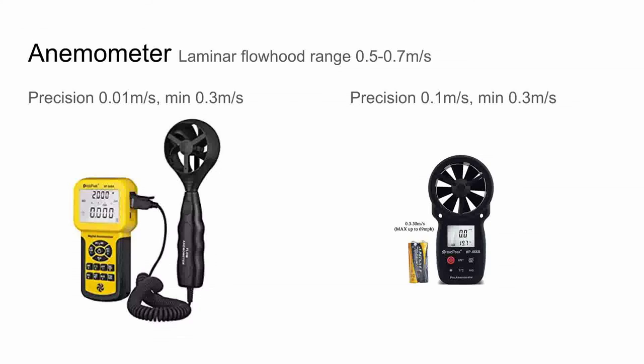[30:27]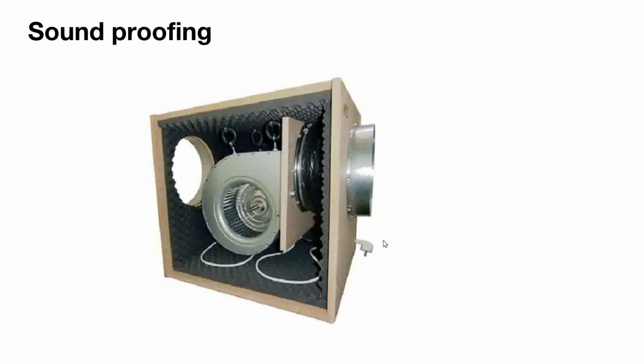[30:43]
So I used this anemometer, it's very precise, to calculate the flow, but maybe this one is okay, it's enough. It's not very expensive. And in our design, we used this idea. This is not our picture, we found it somewhere, but we used something very similar to this, you will see in the video.
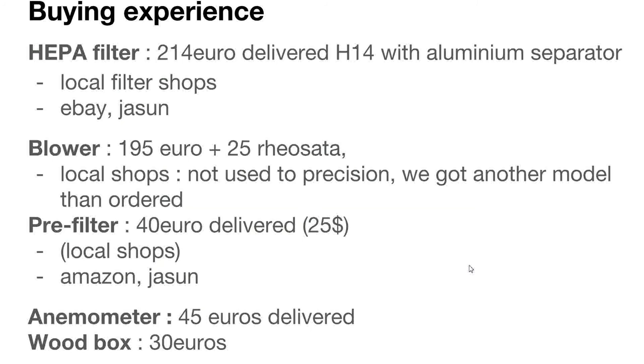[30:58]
The buying experience, sourcing materials for the HEPA, was personally a nightmare. It's not easy to find the HEPA filter, especially if you have a specific depth and specific pressure and so on, and people just want to sell you whatever they have and are used to selling. And there is not a lot of information here in Europe in general. Maybe you need to call people, but there is nothing online, very little.
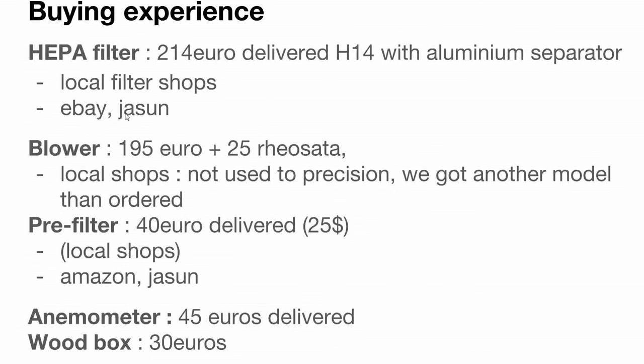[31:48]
At the end, maybe eBay, but Jasun didn't want to sell to me because there was a problem with their payment system. I don't know, they stopped answering the email once it happened. So it's a shame because it's one of the good manufacturers of filters, but they want to sell many filters, of course, and are not interested in one or two. You will have this reaction from all these guys because they are used to professionals, to hospitals and things like that. They are used to selling like 10, 50 filters, not one filter with specific requirements. So this is a bit of a problem when you try to find HEPA filters.
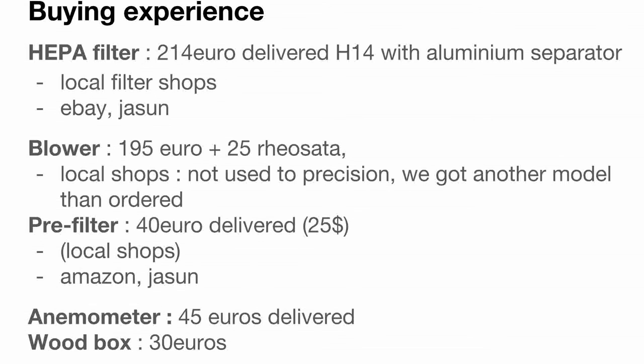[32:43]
People are not used to normal people buying a HEPA filter. Maybe eBay was a good solution, but at the time I couldn't find a good price for a HEPA filter of this size, 90 by 60 centimeters. It's this price for H14 delivered with aluminum separator. Jasun had it 50 euros more, and that's all I found in Europe. So maybe I'm a crappy sourcer. But really, it was a nightmare, and the blower as well.
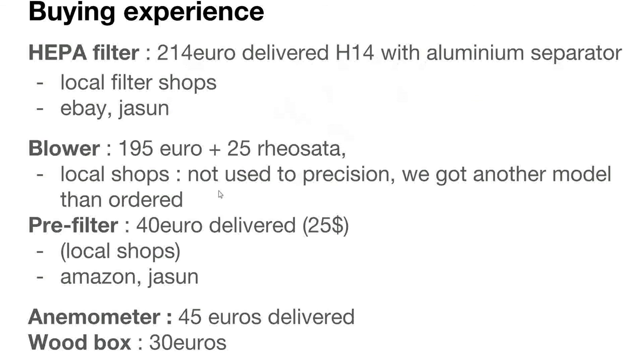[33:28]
And finally, the funny thing is, after running all around the world, I found it in my neighborhood, just at the local shop in the street where I never go. And they had this blower we bought, and we bought also the rheostat. And again, they didn't have the information, but it's a known blower, so you could find the information by yourself. The funny thing is that we got another model than the one we ordered, and it was fortunate because it was less strong than the one we ordered. It was too strong anyway, so we are better like this.
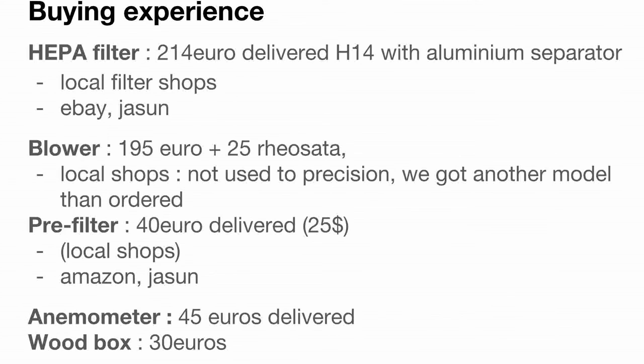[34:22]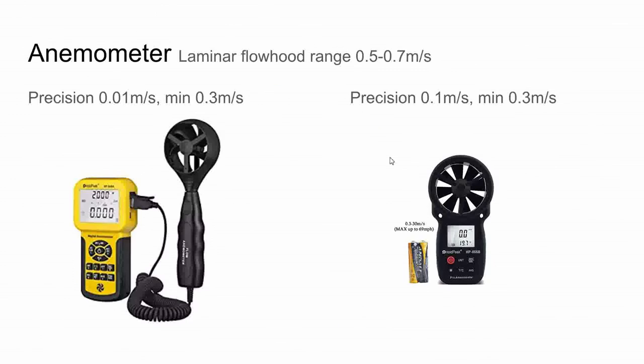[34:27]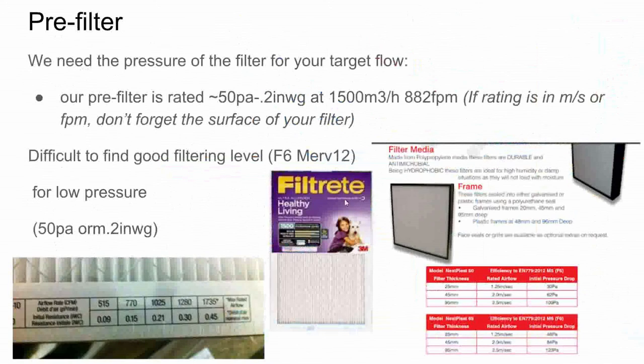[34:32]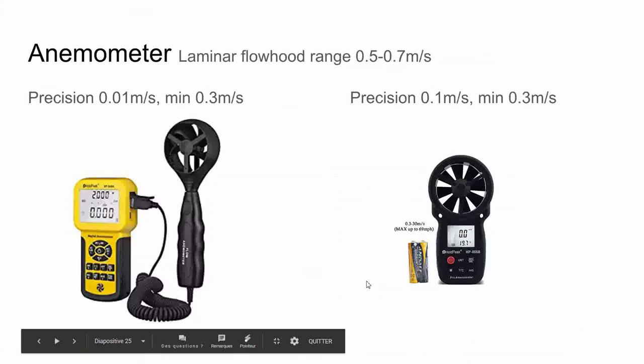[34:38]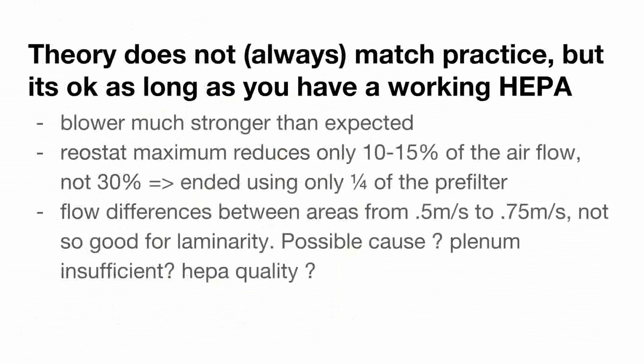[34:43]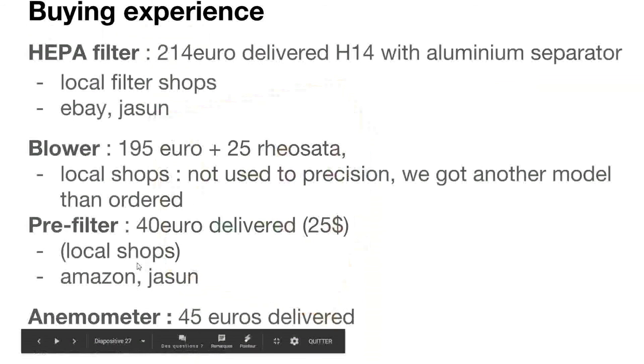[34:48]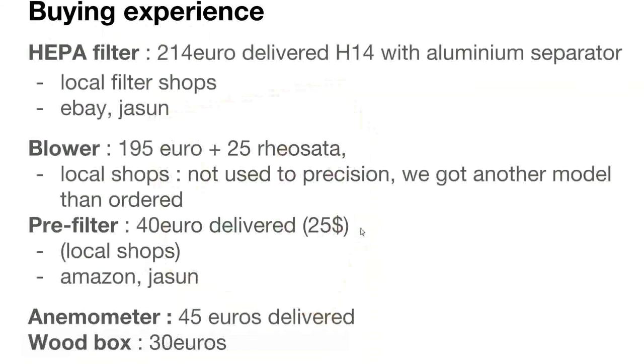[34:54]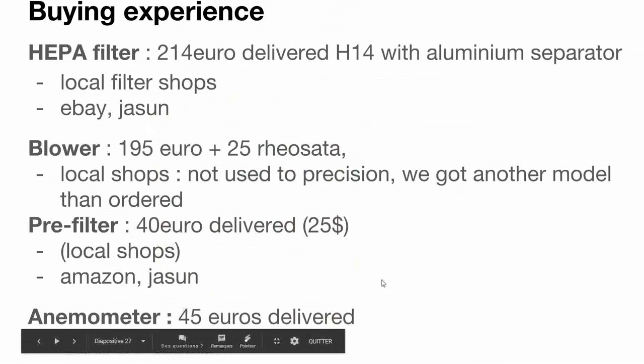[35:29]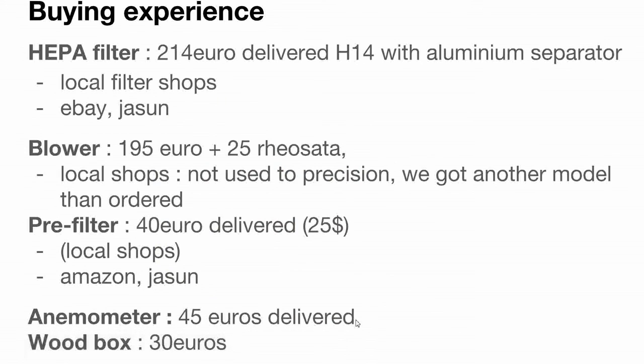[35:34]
I could have used a much lower class filter here, or a much higher pressure filter, but it's not easy to find the filter as well, and Jasun didn't even want to sell me the prefilter. It's a really funny story. Anyway, we got the anemometer for this price, and the wooden box cost only 30 euros.
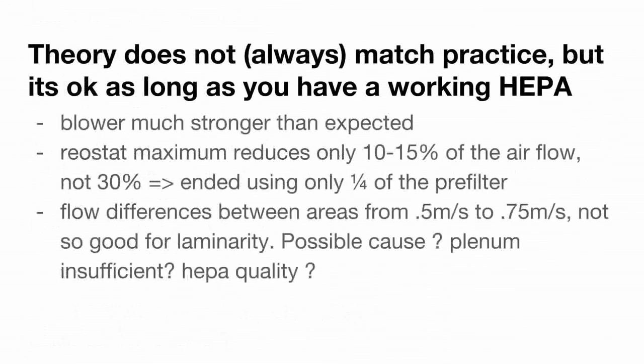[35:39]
So where I want to finish is where the theory doesn't match the practice. But it's okay as long as you have a HEPA that you can use for mycology. Our surprises were that the blower was stronger than expected, so we could have taken a smaller blower. The rheostat at maximum didn't reduce the air much, only 10-15%, not the 30% it's supposed to reduce, and not like the curve says. So we ended up using only a quarter of the prefilter. We closed the three quarters.
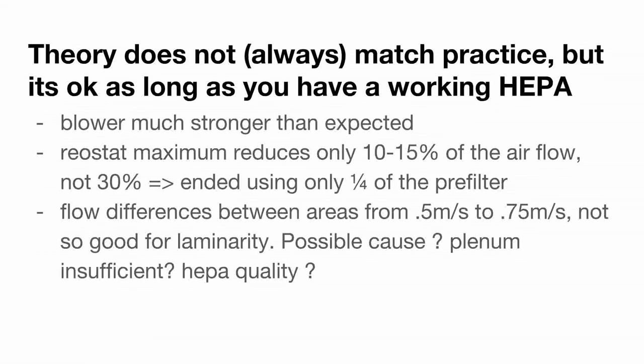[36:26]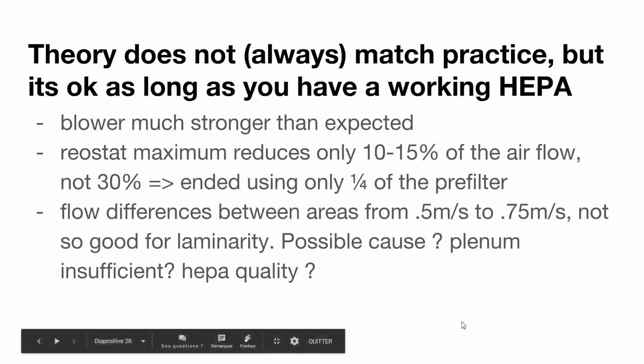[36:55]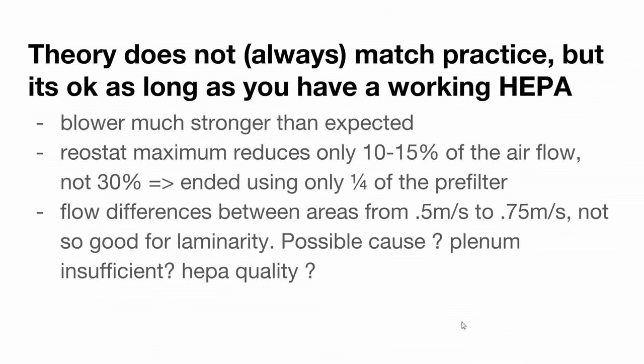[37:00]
There are differences in the flow between areas, from 0.5 to 0.75, and this I don't like so much. That's not so good laminarity. I don't know what's the cause. Maybe the plenum is too small, maybe the HEPA is not that good, the Turkish Italian HEPA. Anyway, we don't have problems of contamination, but for the next one I would like to have a more regular flow everywhere, in each corner, the center and the whole area.
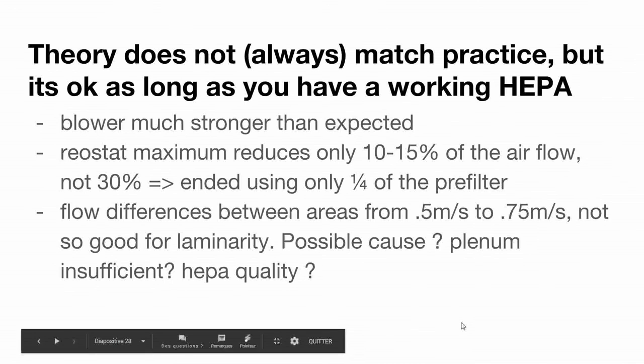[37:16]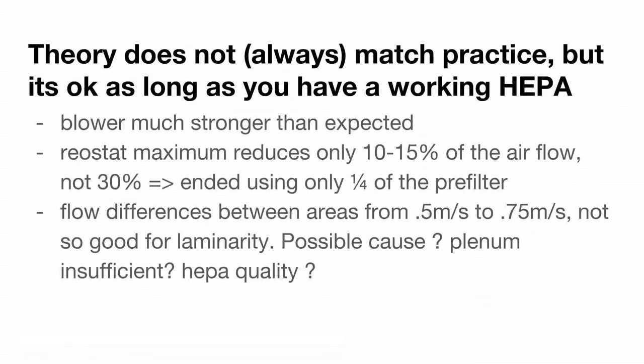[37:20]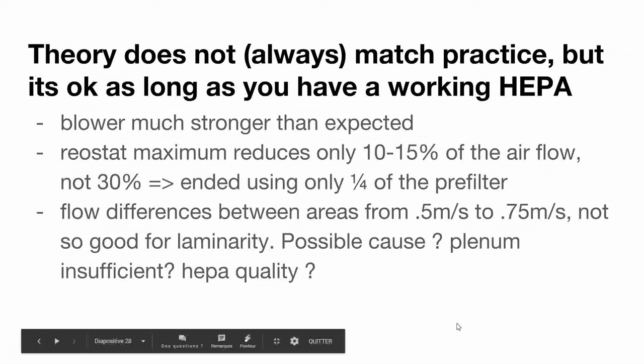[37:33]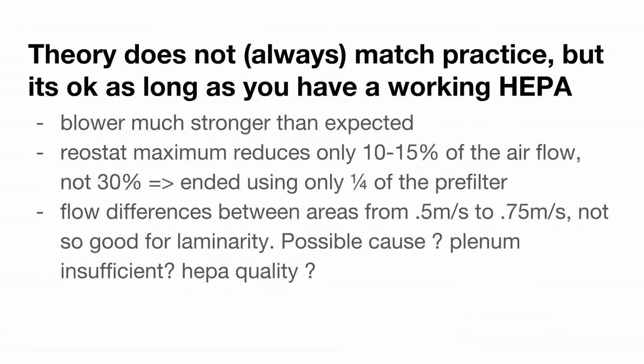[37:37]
So that's all. I will let you watch the pictures and the video of the construction of the laminar flowhood we built, and I hope that you will also build your own flowhood and that you have appreciated the information in the presentations. So if you did
